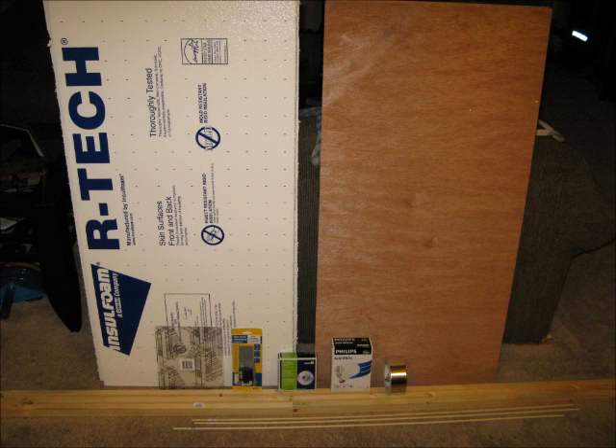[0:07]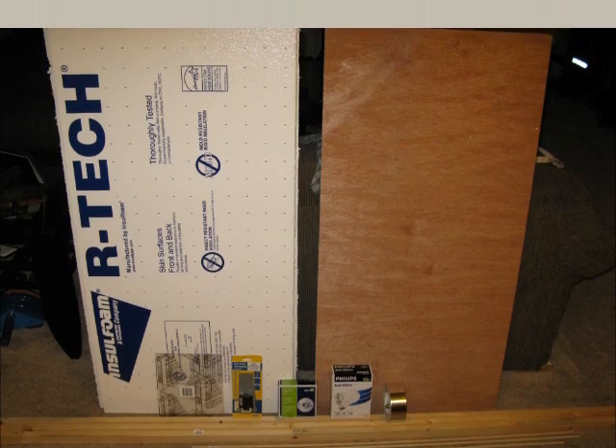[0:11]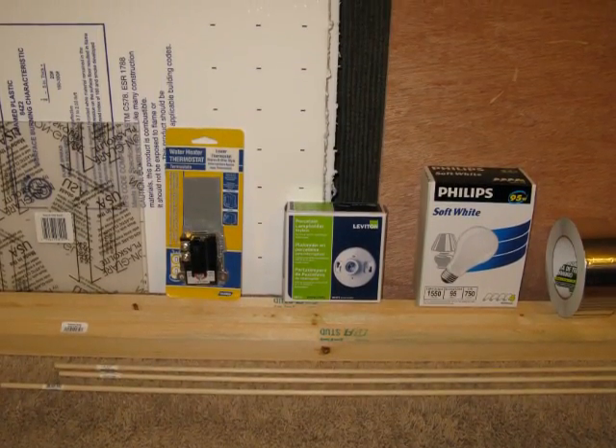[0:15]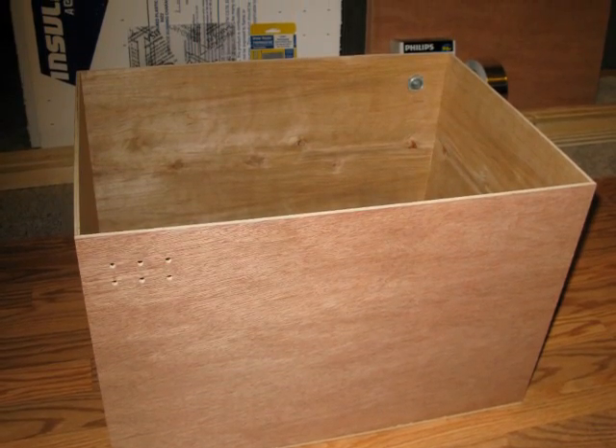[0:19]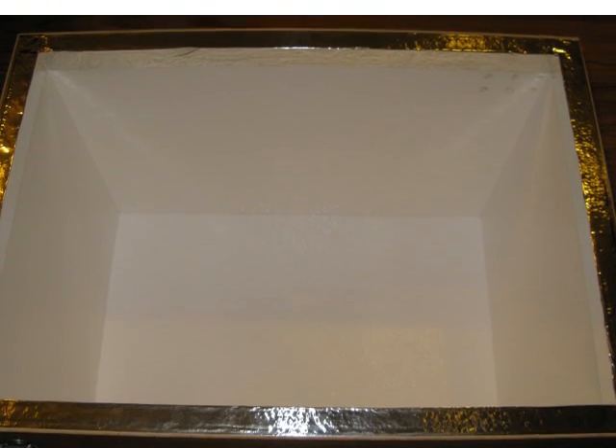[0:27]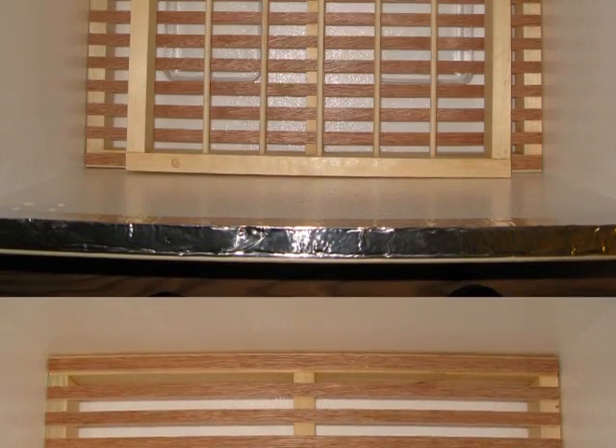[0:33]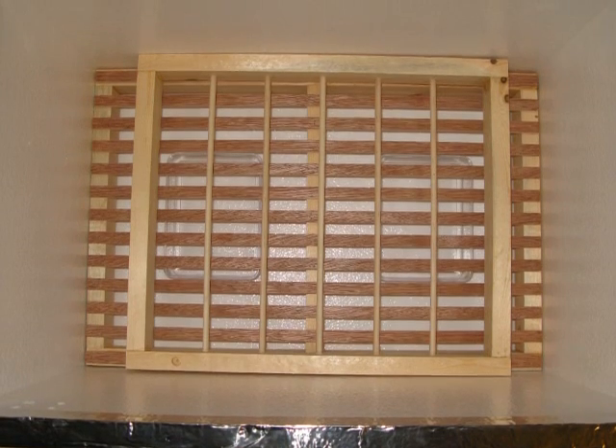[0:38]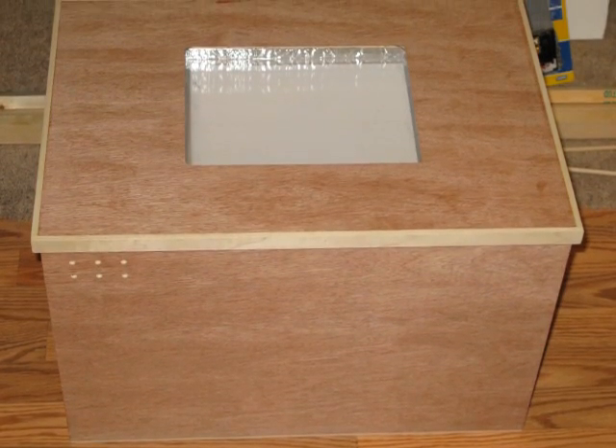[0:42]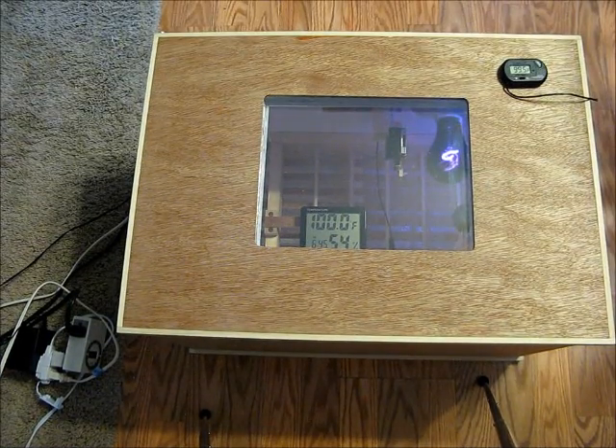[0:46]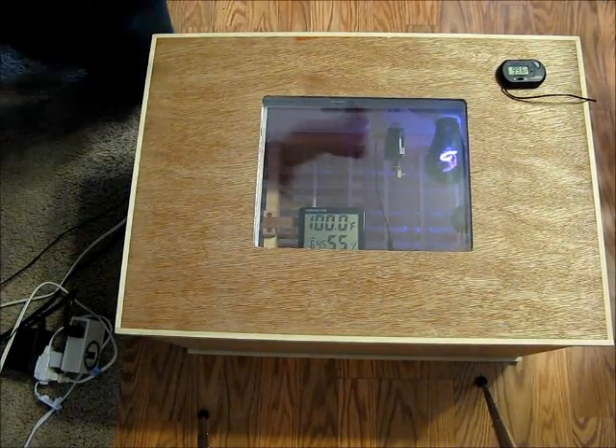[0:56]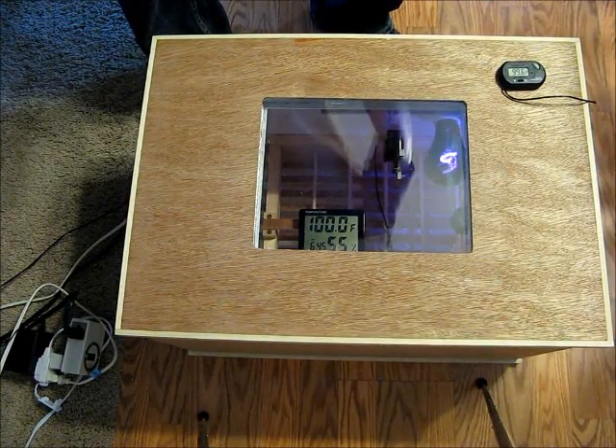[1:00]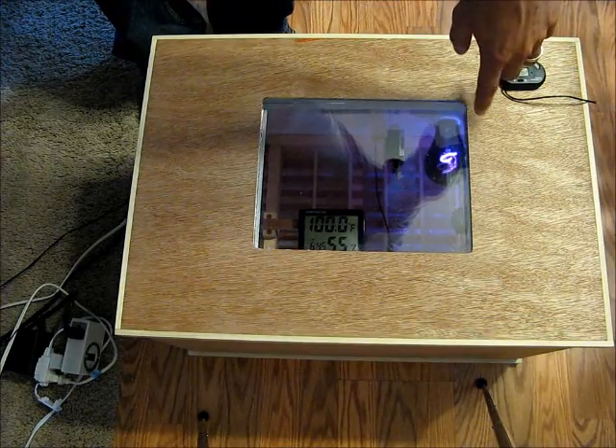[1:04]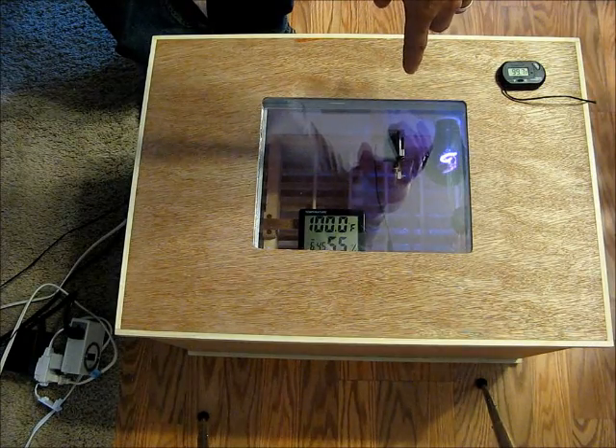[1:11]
So here's the finished incubator. Thought I'd give you a quick rundown in case the pictures didn't give all the details. Basically, over in the top corner, I've got a little 12-volt computer fan that blows over a light, which is a 100-watt night light for reptiles. And right next to it, I have the water heater thermostat out on a little peg facing it,
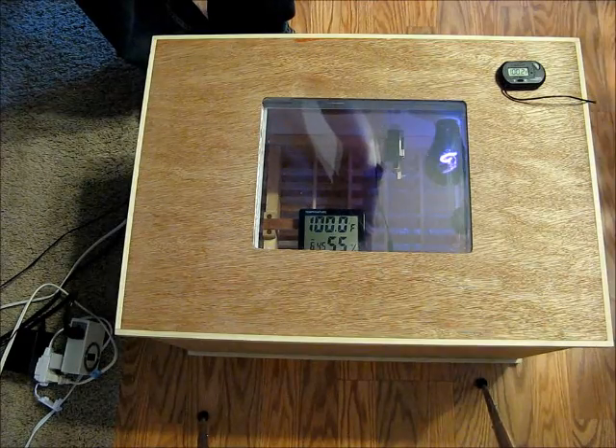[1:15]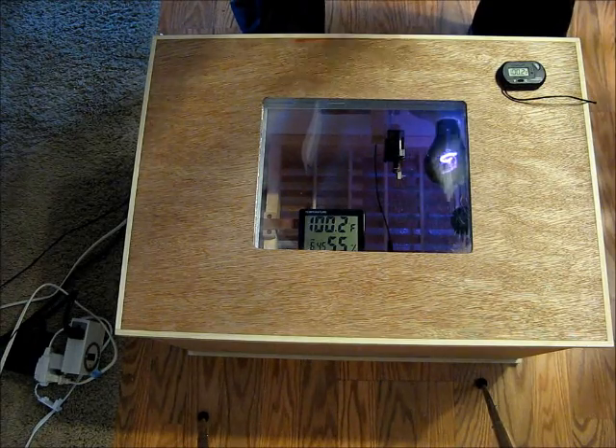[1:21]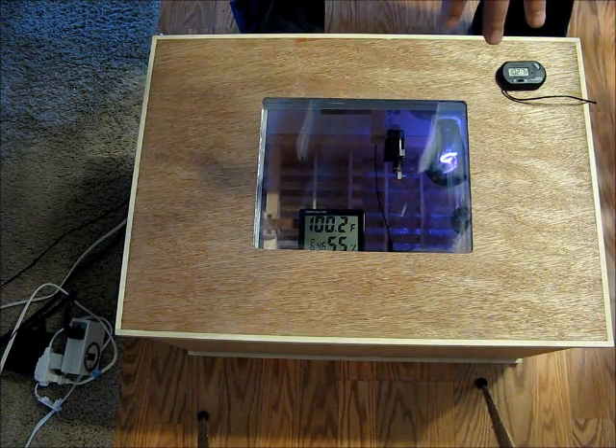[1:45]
which might seem weird. But the purpose is that water heater thermostats are built to be on the side of a water heater, so they're not very sensitive unless they have really good contact with the heat source. If you just put it on the wall, it's probably not going to work out too well. I had it on the wall initially, and it would swing the temperature by 15 degrees. It wouldn't kick on until it dropped 15 to 20 degrees. Whereas if you put it right next to the light bulb, it will heat up extremely quickly, and when it shuts off, the fan will cool it down extremely quickly, which really narrows your temperature range down near the eggs, which is what I did.
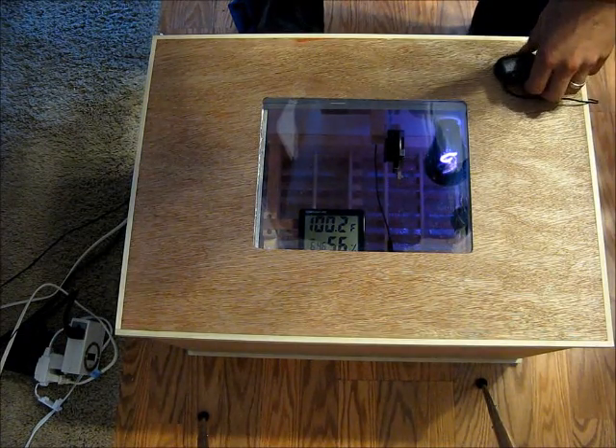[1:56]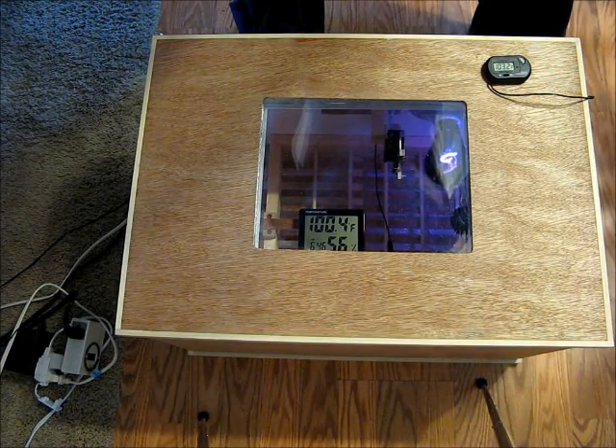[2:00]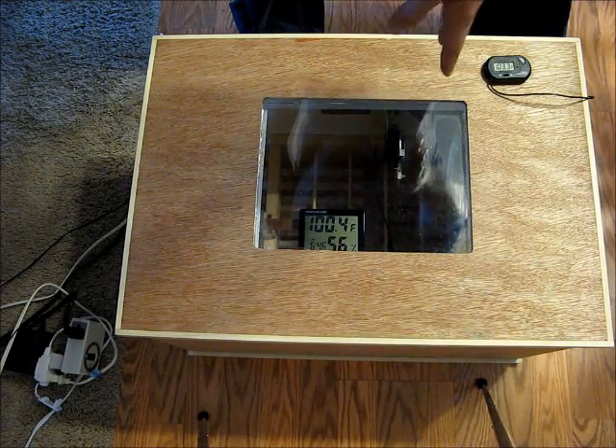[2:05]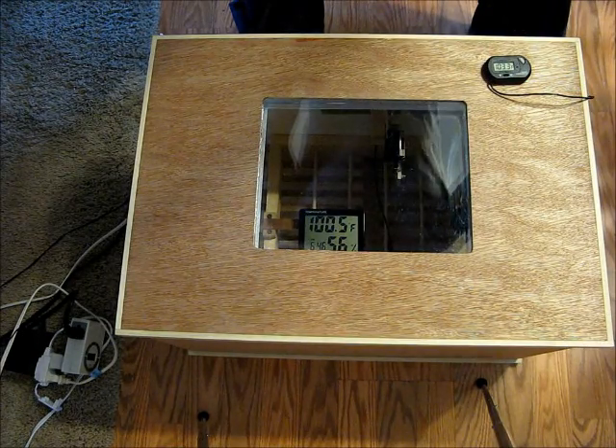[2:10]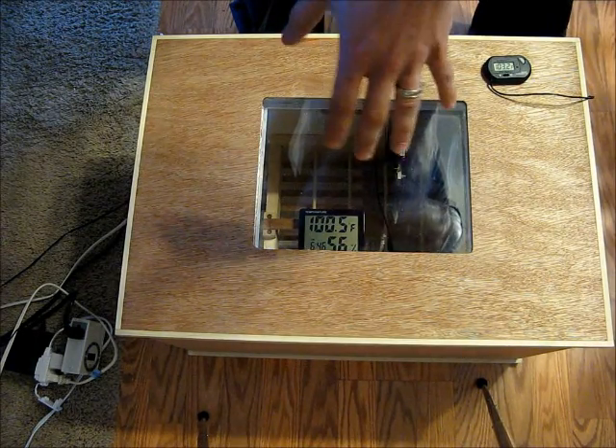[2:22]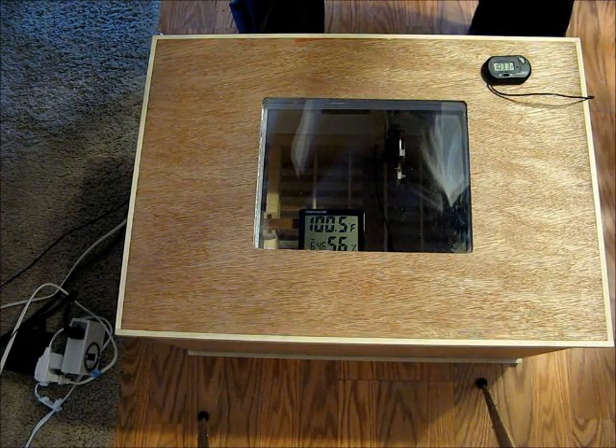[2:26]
Now this little thermometer is a lot more sensitive than the big LED screen you see in there. Basically, I moved the thermostat closer and closer until I got it within a range I liked. It would vary between 98.7 and 103 degrees, so it would kick on at 98.7 and kick off at 103 or so. And then this other thermometer takes a little longer to change, so it hovers around 99.5 to 100.5, which is perfect for chicken eggs.
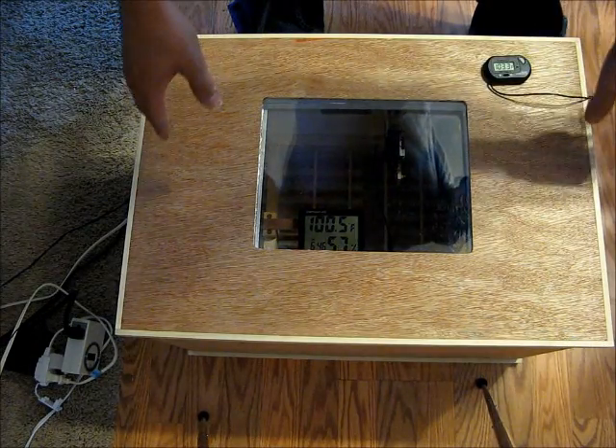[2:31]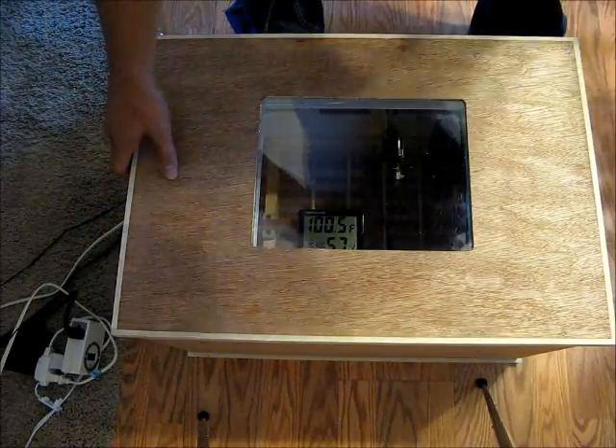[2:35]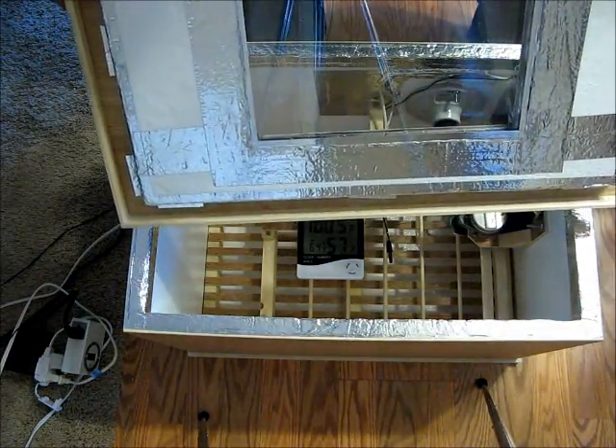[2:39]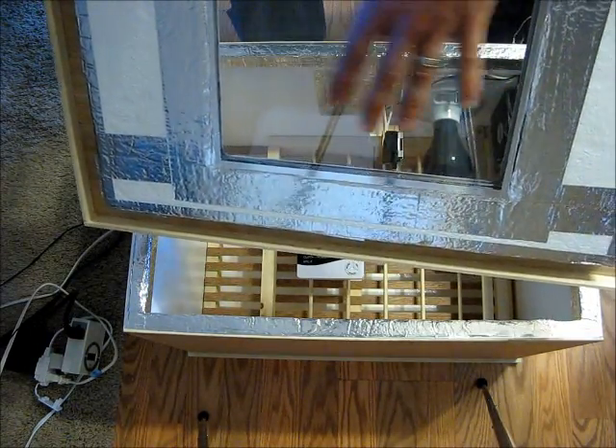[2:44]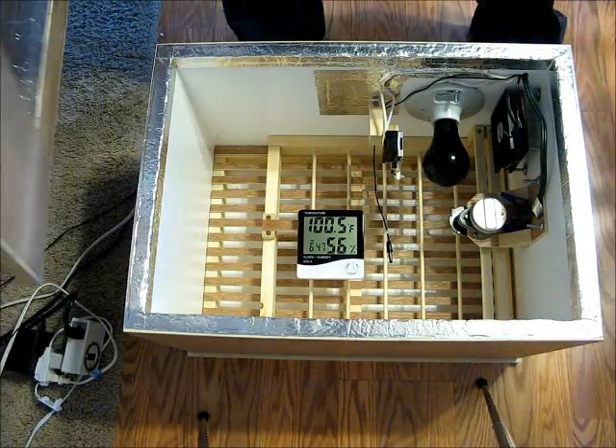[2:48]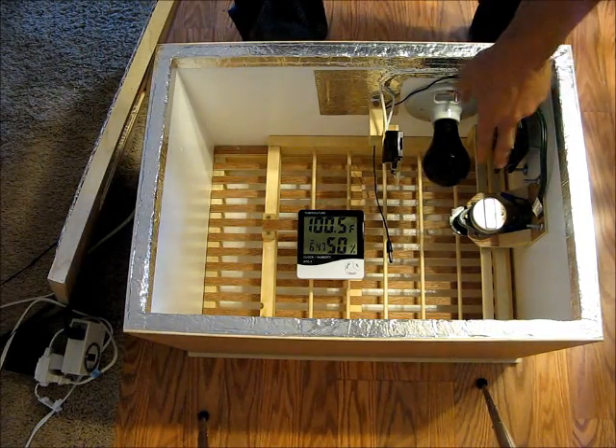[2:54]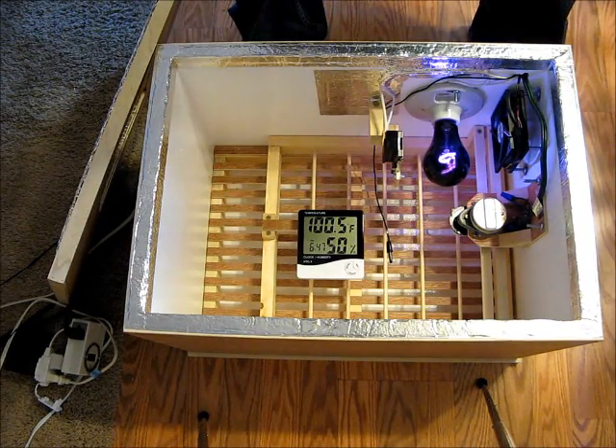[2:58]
I'll go ahead and take off the lid here so you can see what it looks like internally. I used a lot of this 1-inch foam to line the top and the inside, and then I used a pane of Lexan on the inside and a pane of Lexan on the outside, so it's like a dual pane window. There are some ventilation holes cut up in this corner, about 6 of them, and there you can see the fan, light, and thermostat combo.
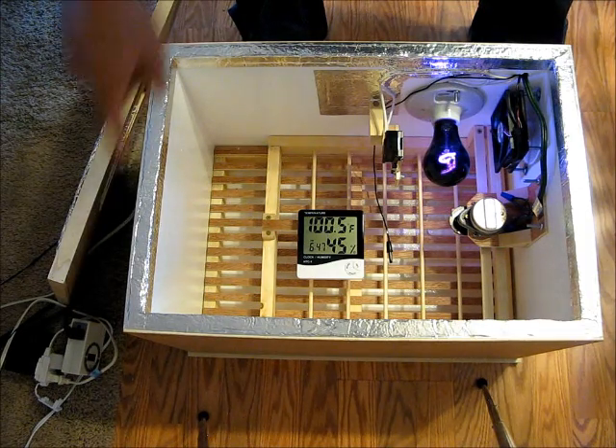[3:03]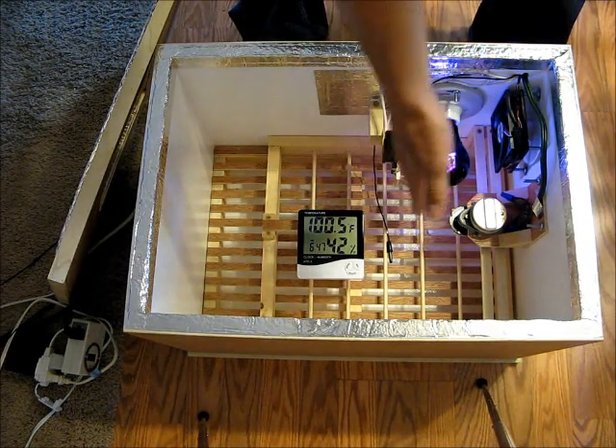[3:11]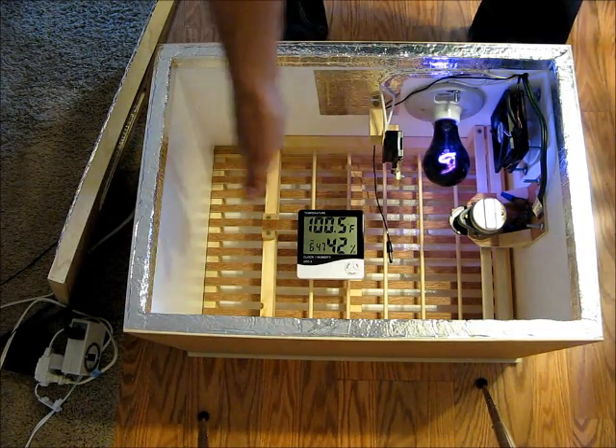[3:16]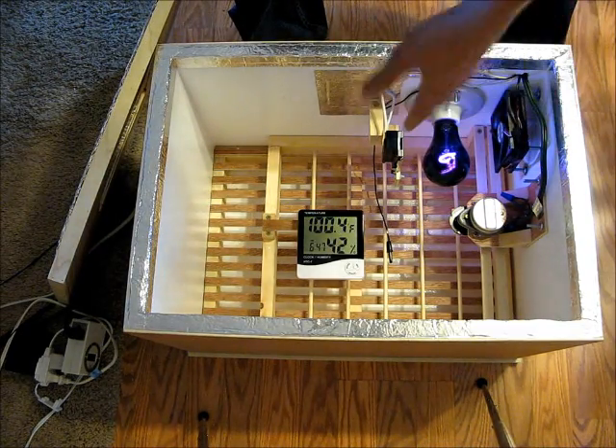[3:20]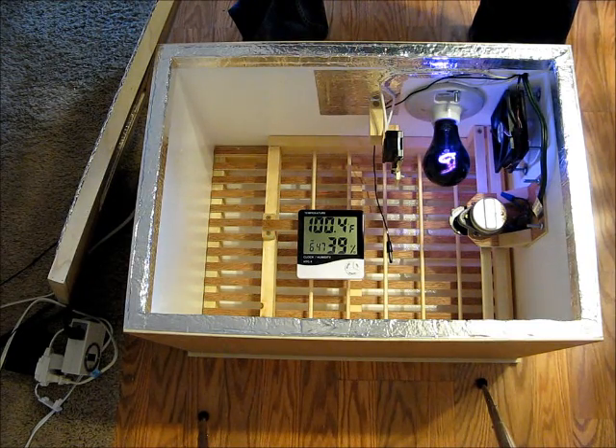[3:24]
Right here, this is a little telescope motor that's 1/10 of an RPM. I have a timer over here on the floor that it's plugged into, and it'll turn it on for 5 minutes once an hour. That 5 minutes will move the tray from one side to the other. So it basically goes over there, sits for an hour, goes back, sits for an hour, and does that all day. It moves very, very slowly. It takes the full 5 minutes just to move the tray over there so it doesn't jostle the eggs.
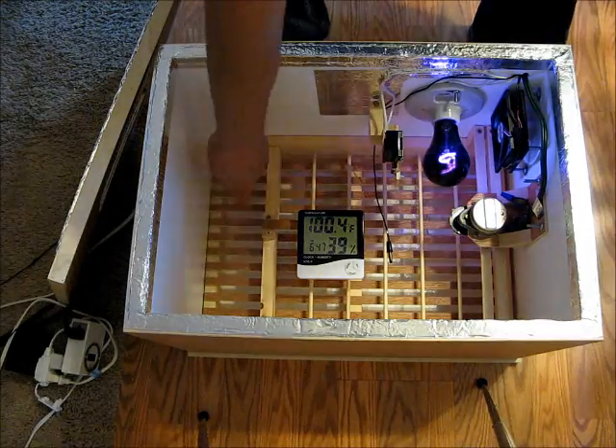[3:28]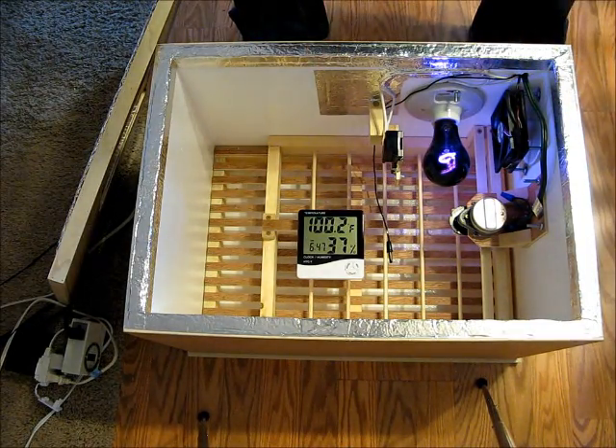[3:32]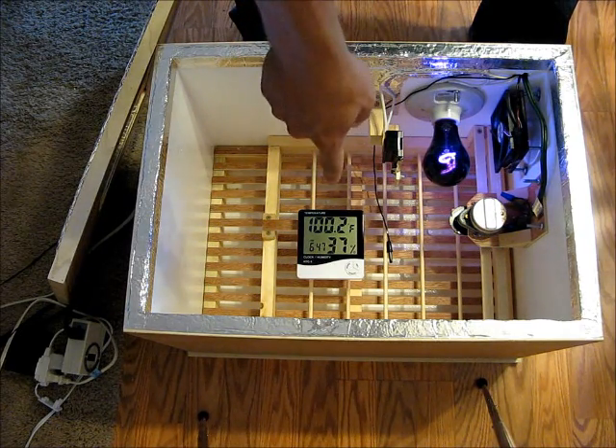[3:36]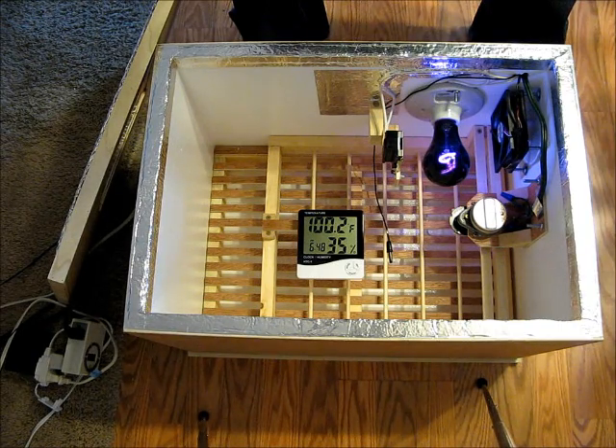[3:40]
Underneath the grate here, I can put up to 4 of these little trays, and I've got one of them filled up with water. At the beginning when I had the lid on, it was about 54% humidity, which is just right for the first 18 days, 50 to 60%. Later on you want to raise it to about 70 or 80% for the last 3 days, and you can just fill up more trays to do that. But yeah, that's the basic idea.
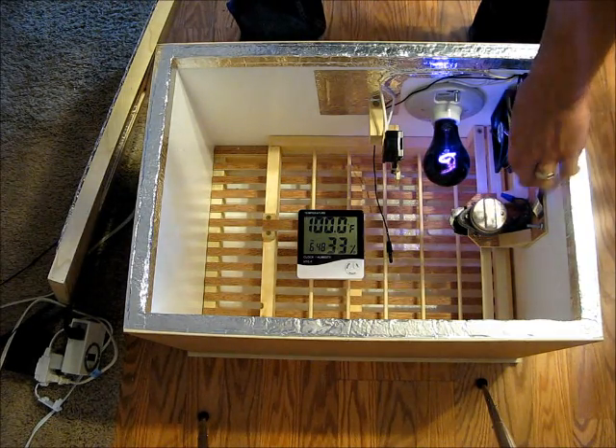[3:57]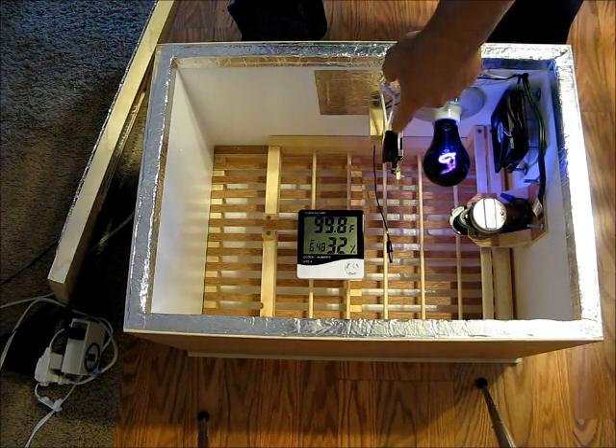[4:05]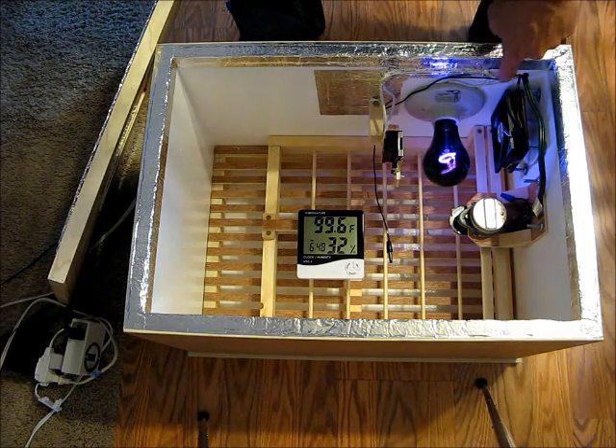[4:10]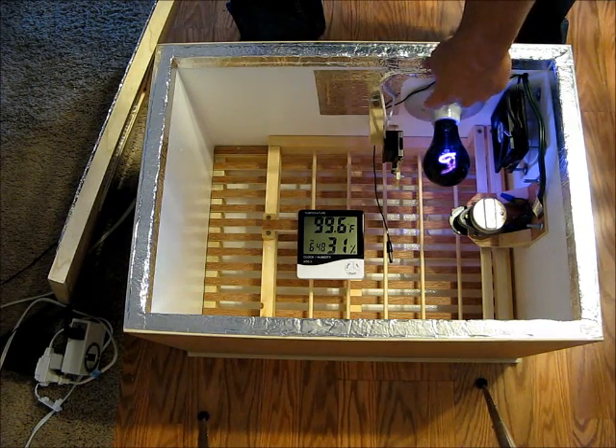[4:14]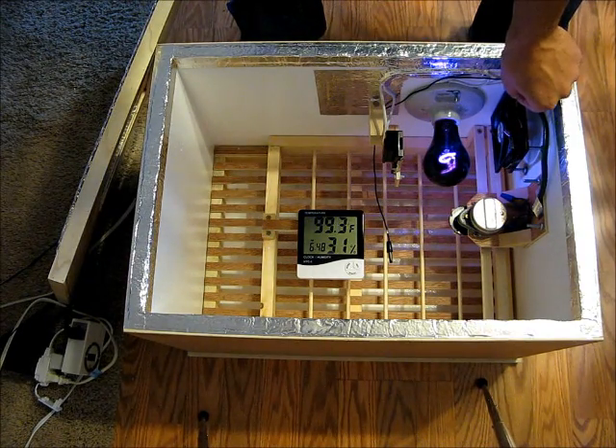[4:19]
As far as wiring, I just took one extension cord and wired it directly to the motor. That way I can unplug the motor or have it on the timer, and the thermostat won't toggle it off. And then on a separate wire, I go one line to the thermostat, the other line from the thermostat to the light, and then from the other terminal of the light back into the plug. And then of course the 12-volt DC fan is just hooked up to a 12-volt DC adapter over there. One positive, one negative, nice and easy. And that's all there is to it. It's a pretty simple setup.
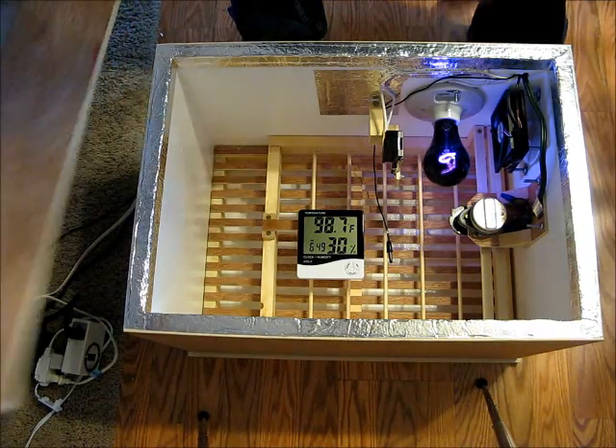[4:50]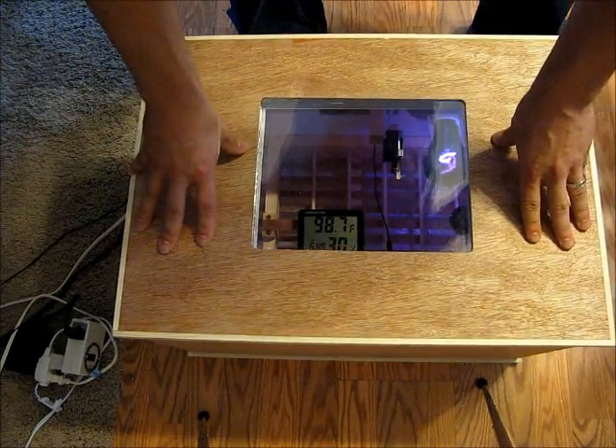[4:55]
Having this really overkill 100-watt light helps it heat up quick and cool down quick. So if you have a room temperature that's going to vary a bit, like a 15 or 20-degree shift, it won't affect the internal incubator temperature much at all, which is nice. That's what my classroom is like, so I wanted to make sure it would handle that okay.
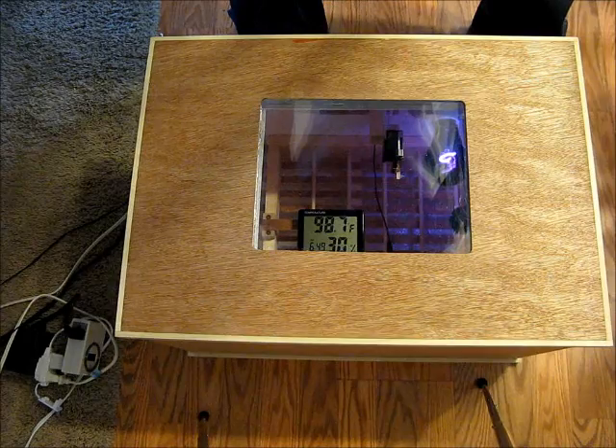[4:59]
Feel free to shoot me any questions you have, and I'd also love to hear if anybody else has tried different things that have worked well to keep improving on a design.
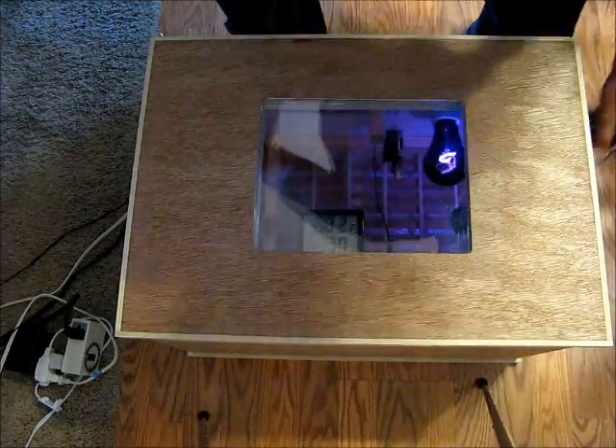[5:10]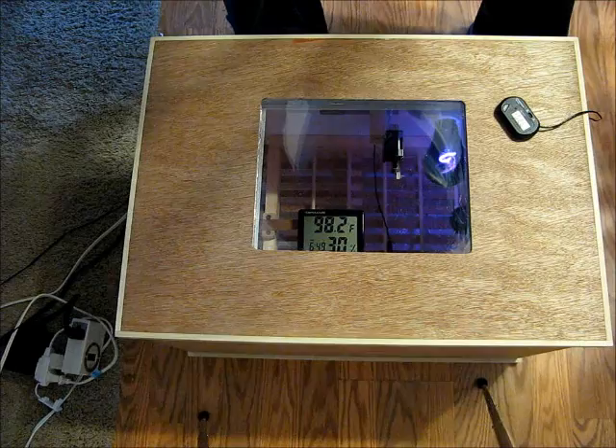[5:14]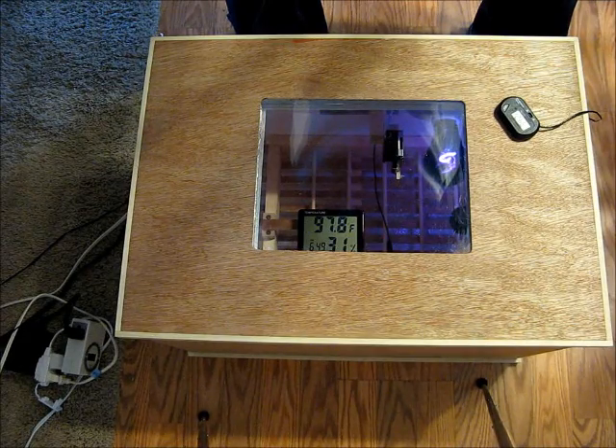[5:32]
This should cost about $50 to $60 if you don't include this thermometer and the timer. The thermometer and humidity gauge combo I got on Amazon was like $8 after shipping. And all the other parts and pieces, I'll try to put a list at the end so you can see the prices. But yeah, $50 to $60 to get even a styrofoam version of this. A Hovabator with the egg turner in it and a fan, you're going to be at $120+, and it probably won't be nearly as stable as this, since this is insulated even better.
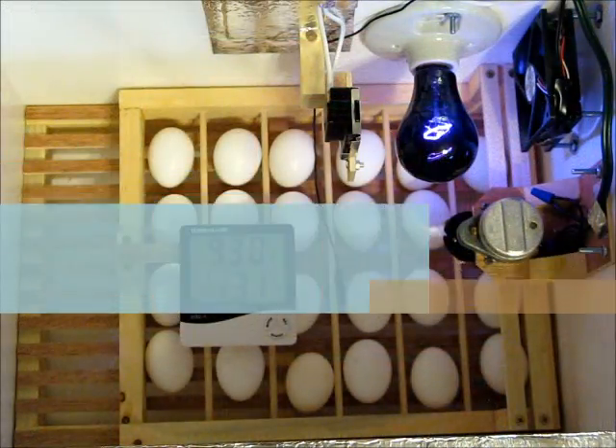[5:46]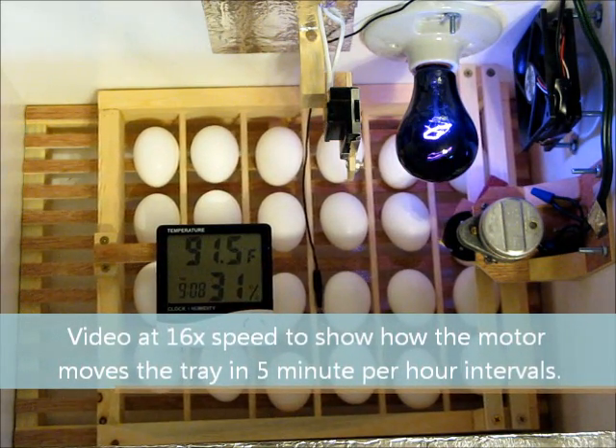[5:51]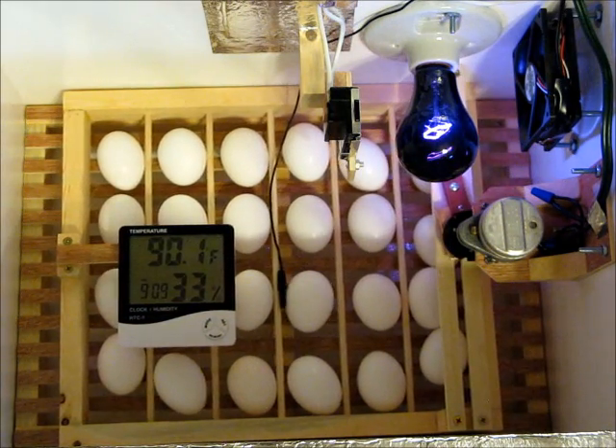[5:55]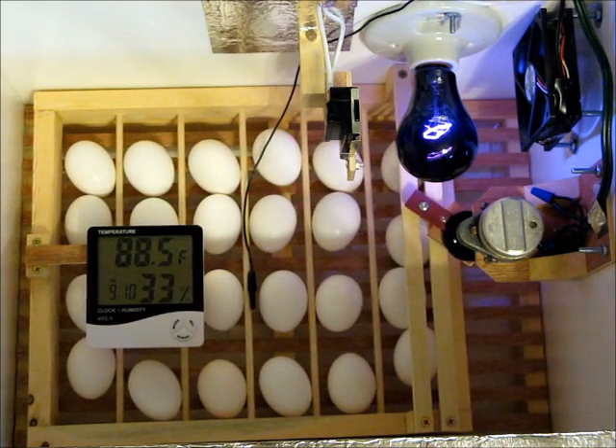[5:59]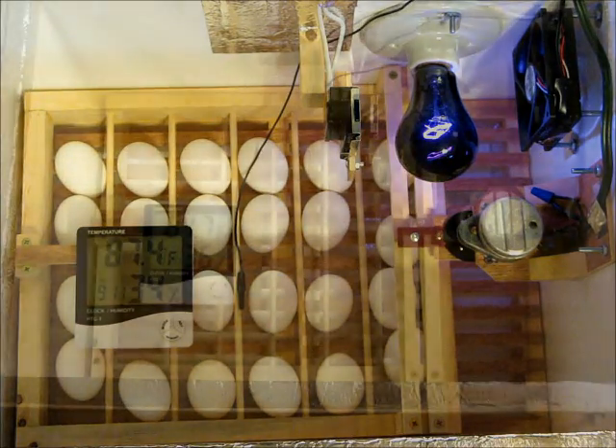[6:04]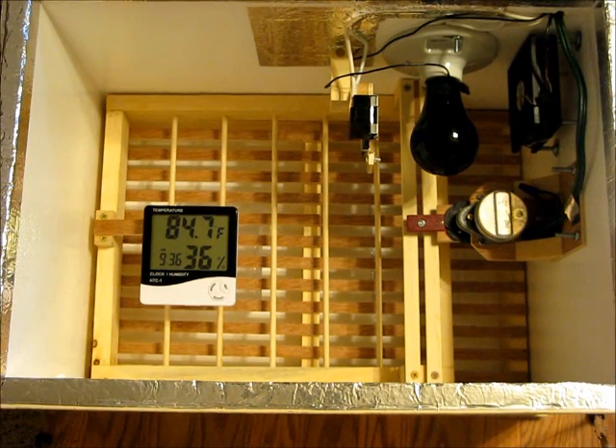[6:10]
Let's touch on something that I forgot to mention in the video. Traditional egg turners usually have little cups for each individual egg to sit in. And they're really nice and handy. The only issue is 3 days before they hatch, you're supposed to take the egg turner out. With that design, you have to take the entire egg turner out and then individually put the eggs back in. It just takes a little extra time. I thought I might as well streamline it if it's not too bad to do so.
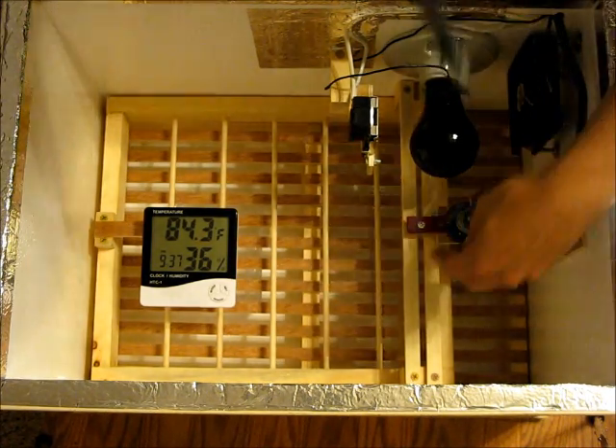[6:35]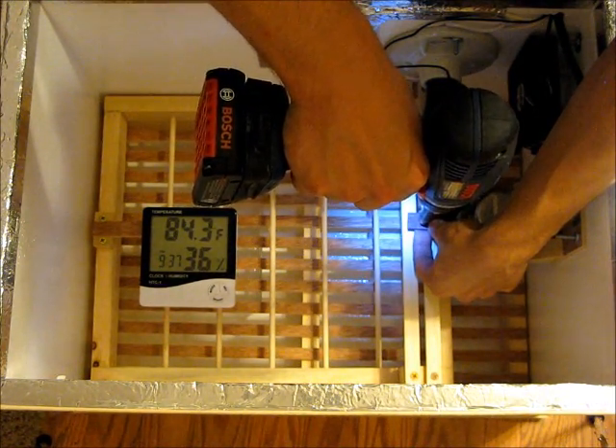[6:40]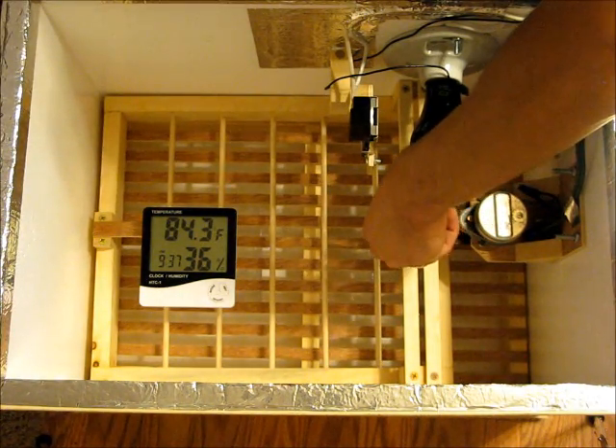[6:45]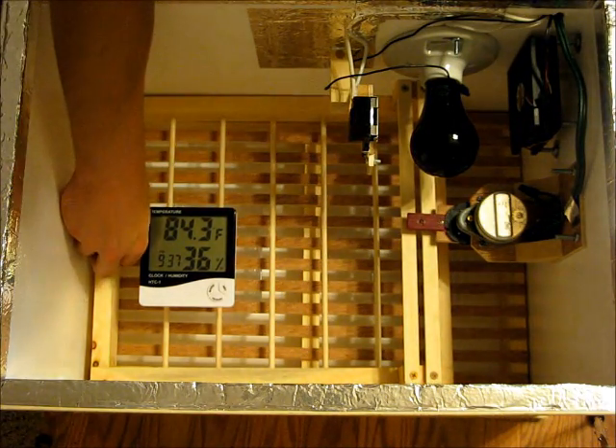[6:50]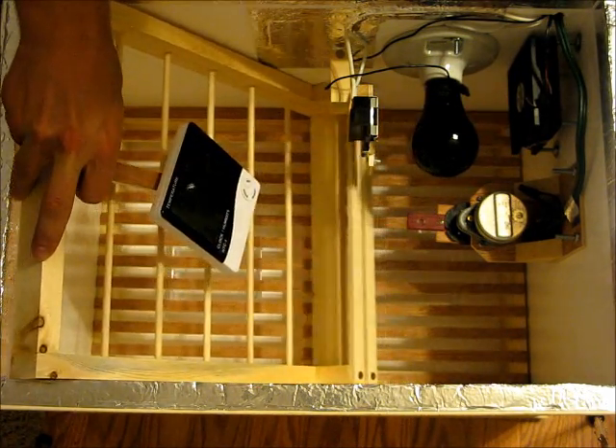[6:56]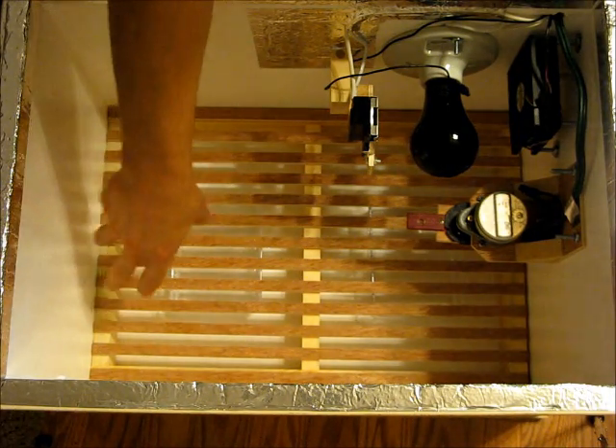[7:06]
With this design, all you have to do is get rid of this screw here. I just loosen that up, and then you can tilt this whole unit and drag the eggs forward slowly, and pretty soon it'll clear the eggs, and you just pull the whole mechanism out and put the lid back on. It takes about 20-30 seconds and you're done. It's a simpler process that way, and now the chicks can walk around freely as well. It's not too tough that way.
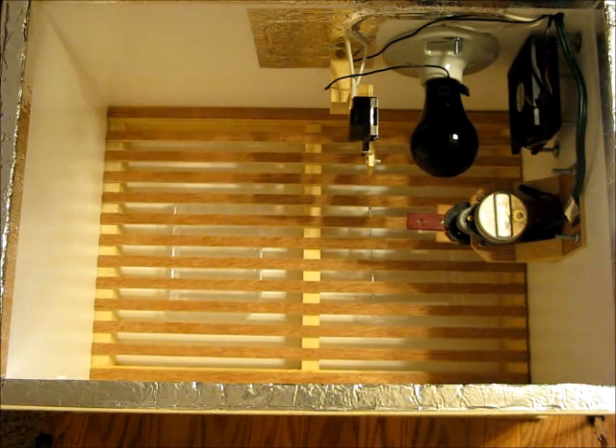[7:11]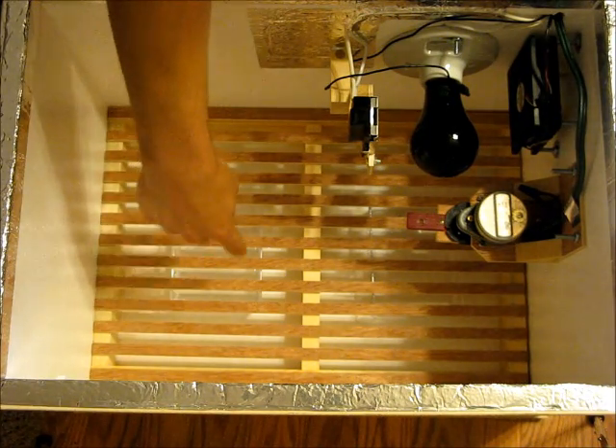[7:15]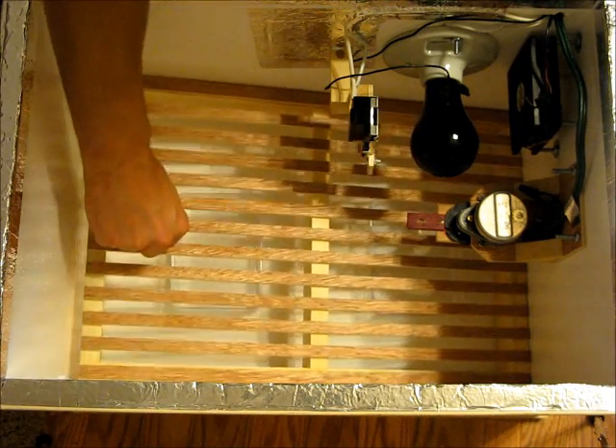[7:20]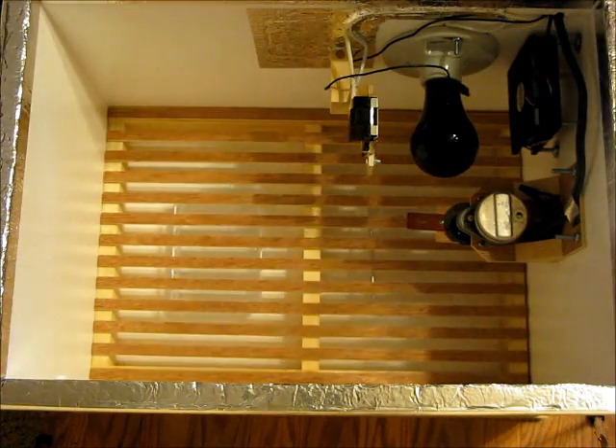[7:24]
It also makes cleaning out the grate or adding more of the little Tupperware things pretty easy too, because once you're here, it's easy to just lift that up and put them in. So that's the advantage to this style egg turner.